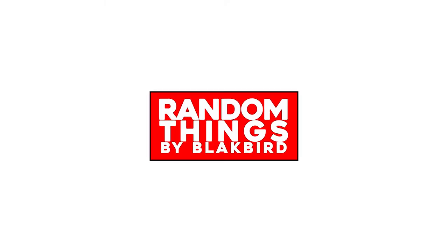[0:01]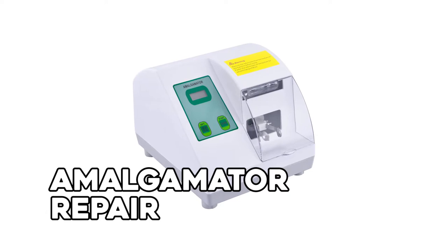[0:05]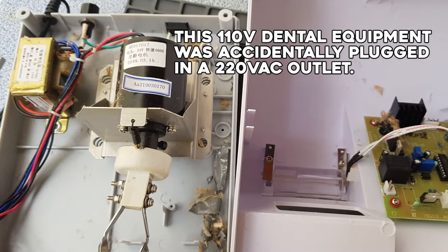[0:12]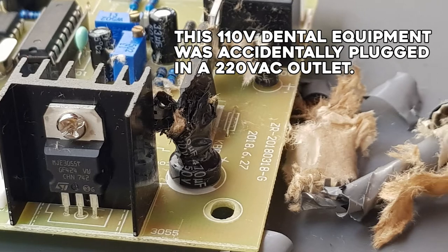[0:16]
Hello viewers, in today's video, we are going to repair a dental equipment which is called Amalgamator. This 110 volts dental equipment was accidentally plugged in a 220 volts AC outlet.
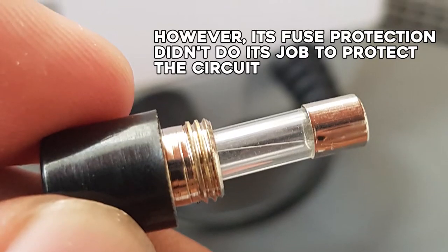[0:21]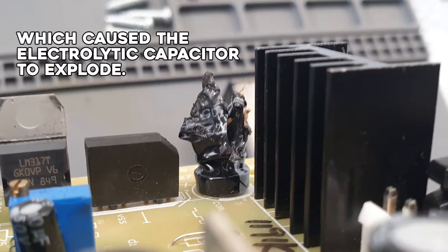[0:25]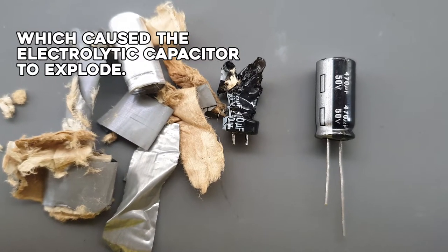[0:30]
However, its fuse protection didn't do its job to protect the circuit due to its high current rating, which caused the electrolytic capacitor to explode. Sadly, it needs to be replaced.
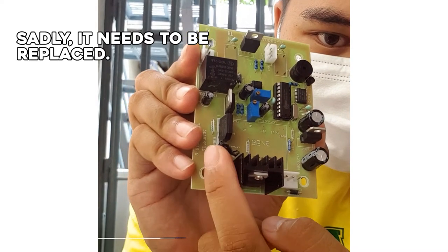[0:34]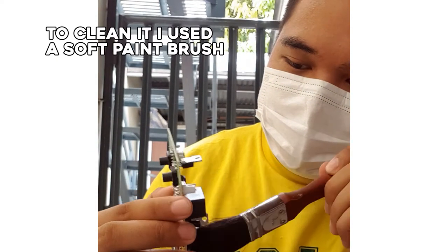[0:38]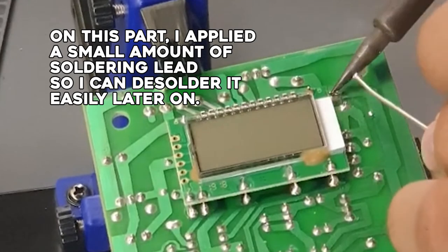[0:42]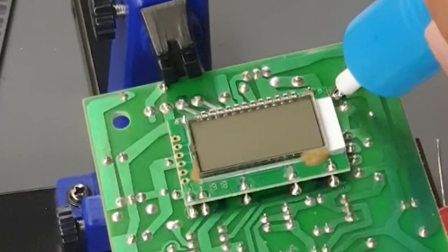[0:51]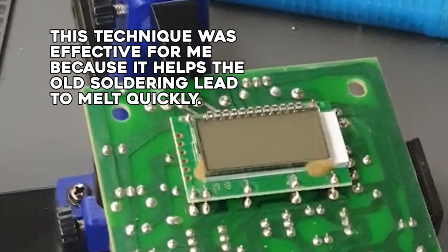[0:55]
But first, we need to clean it from any debris. To clean it, I use a soft paint brush. On this part, I applied a small amount of soldering lead so I can desolder it easily later on. This technique was effective for me because it helps the old soldering lead to melt quickly.
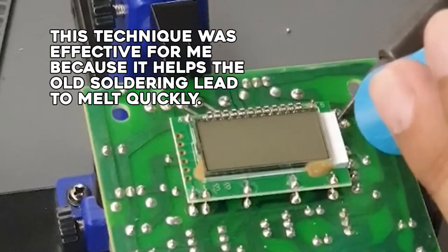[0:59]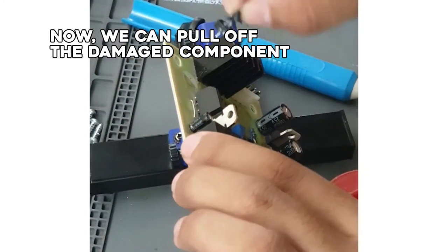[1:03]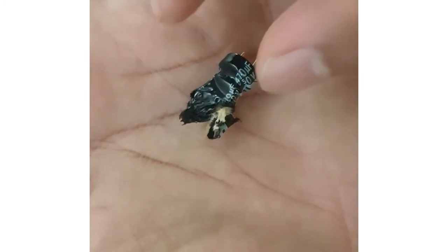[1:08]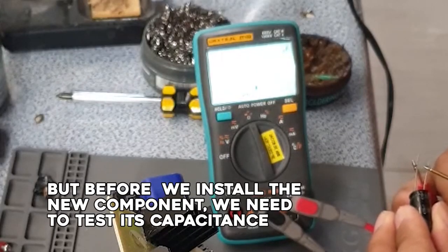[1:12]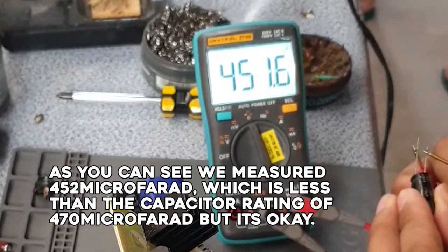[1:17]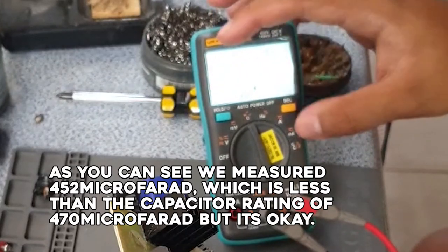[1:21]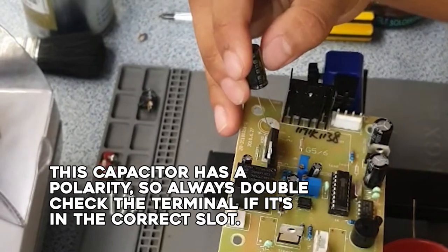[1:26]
And now, we can pull off the damaged component. But before we install the new component, we need to test its capacitance. As you can see, we measured 452 microfarad, which is less than the capacitor rating of 470 microfarad. But it's okay. Remember, this capacitor has a polarity, so always double check the terminal if it's in the correct slot.
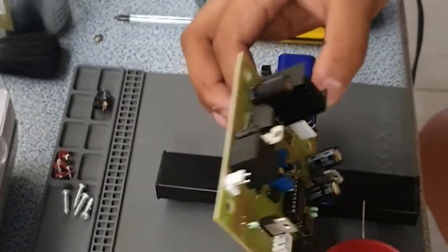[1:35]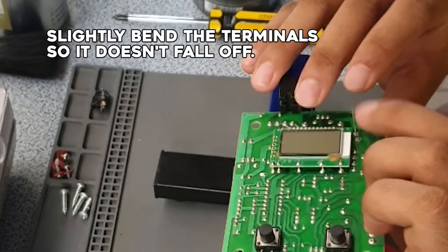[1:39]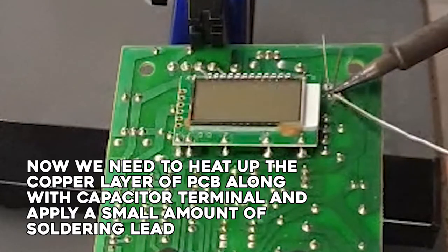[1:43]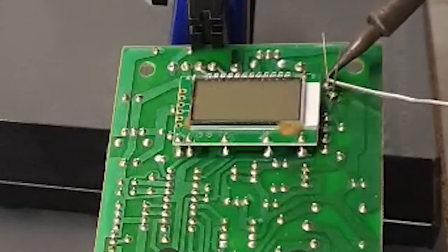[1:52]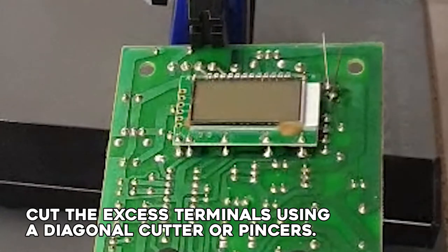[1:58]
Slightly bend the terminal so it doesn't fall off. And now, we need to heat up the copper layer of PCB along with capacitor terminal and apply a small amount of soldering lead. Cut the excess terminals using a diagonal cutter or pincers.
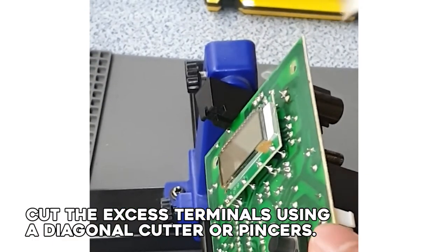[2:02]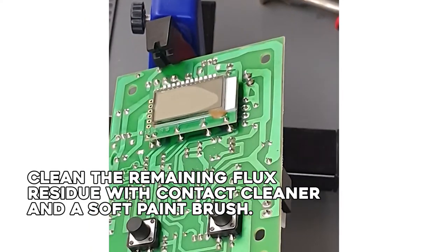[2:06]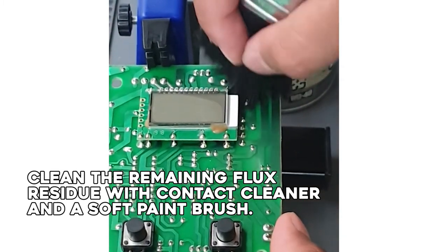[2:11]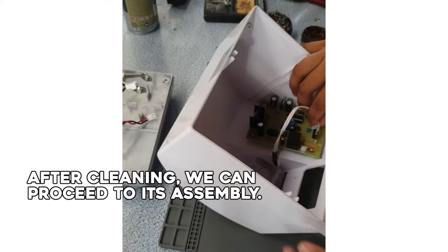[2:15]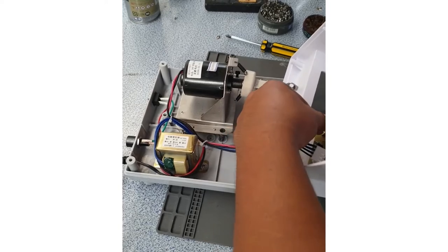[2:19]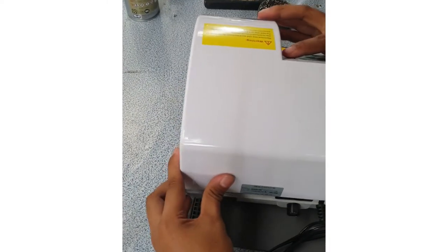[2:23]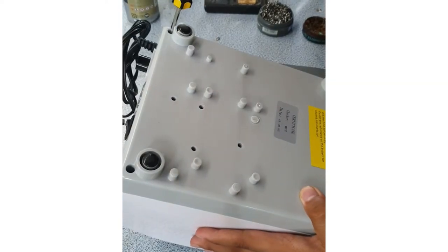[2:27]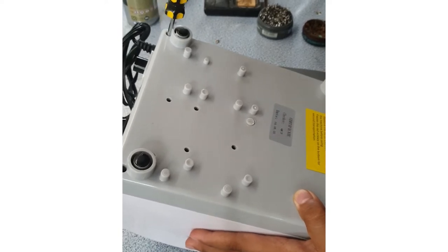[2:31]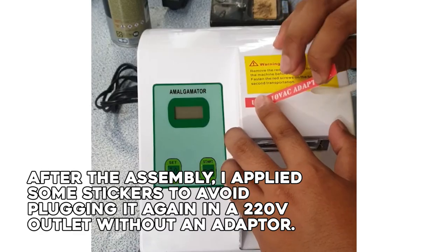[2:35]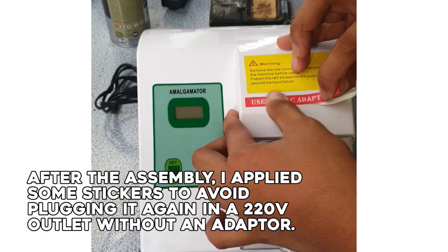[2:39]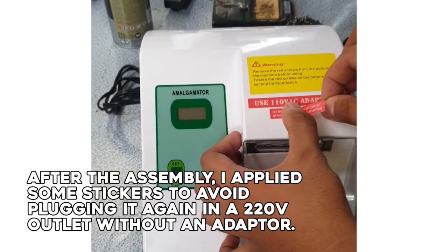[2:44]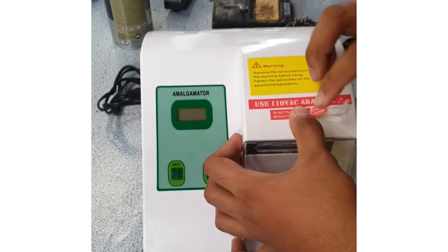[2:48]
Clean the remaining flux residue with contact cleaner and a soft paint brush. After cleaning, we can proceed to its assembly. After the assembly, I applied some stickers to avoid plugging it again in a 220 volts outlet without an adapter. And now, it's time for testing.